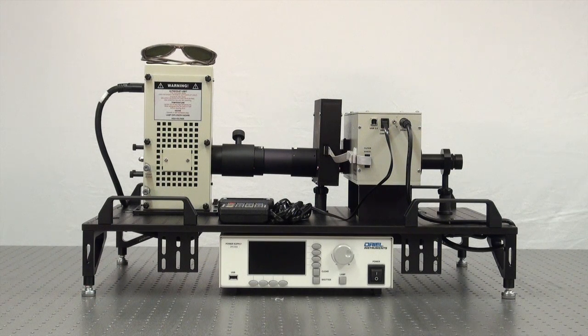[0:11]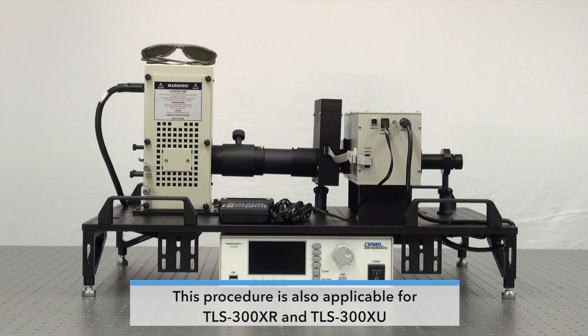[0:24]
Hi, I'm going to show you how to replace and align the lamp in your tunable light source system. So if you have our TLS-75X or TLS-300X models, you're going to want to follow this procedure because you have a xenon lamp inside your tunable light source.
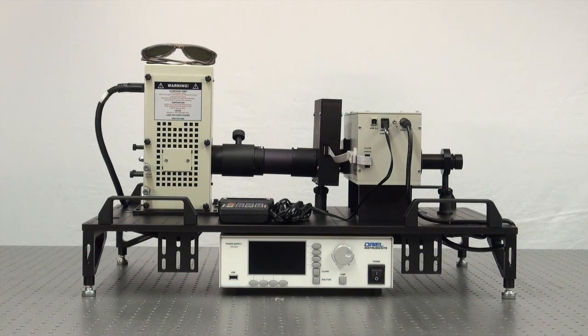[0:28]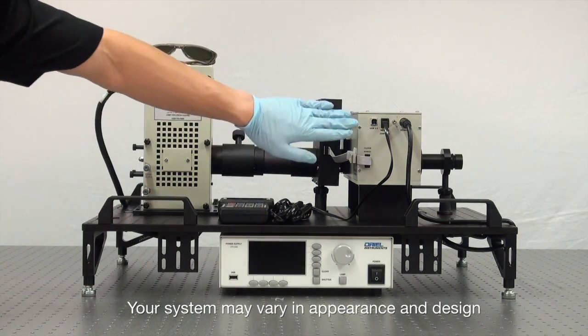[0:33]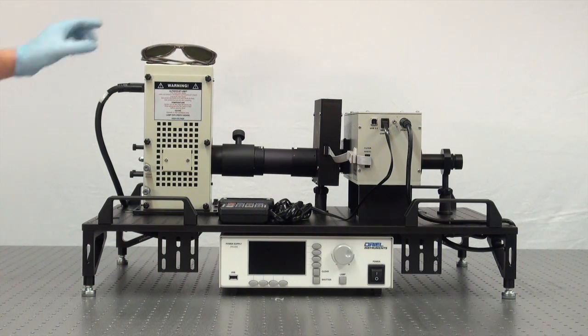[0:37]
So before beginning this procedure, it's important to follow the necessary safety precautions. We're going to make sure that both our power supply and our monochromator are not only powered off, but unplugged as well. It's also important to wear safety glasses because you're working with a high pressure xenon lamp. And it's also important to wear powder-free gloves as well, because you never want to touch the glass envelope of a lamp with your bare hands. So we're going to put on our safety glasses.
And there's 6 thumb screws that fix the side panel of the lamp housing. We're going to unscrew these to allow us to access the lamp. Once those 6 thumb screws are removed, we're going to gently remove the side panel to the lamp housing.
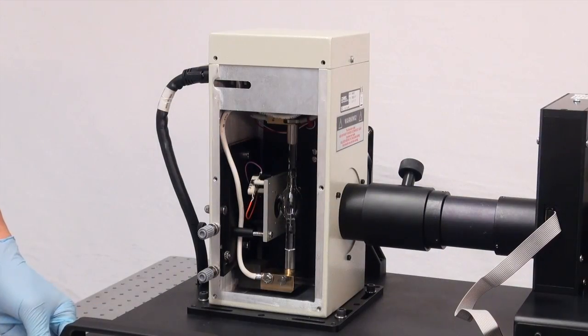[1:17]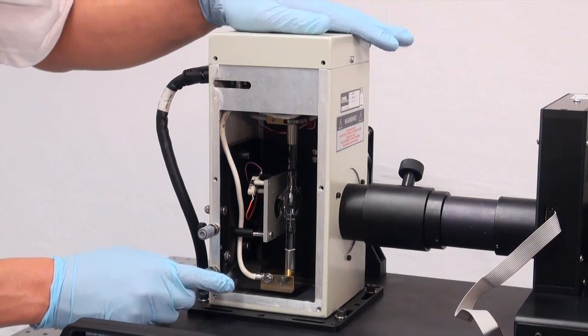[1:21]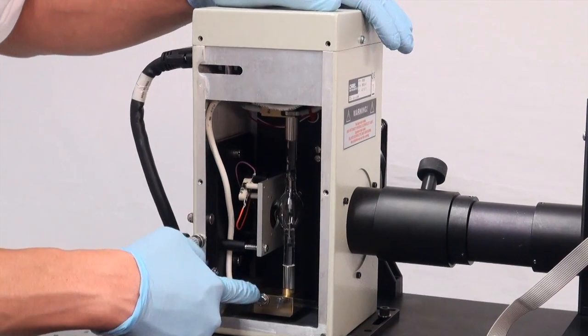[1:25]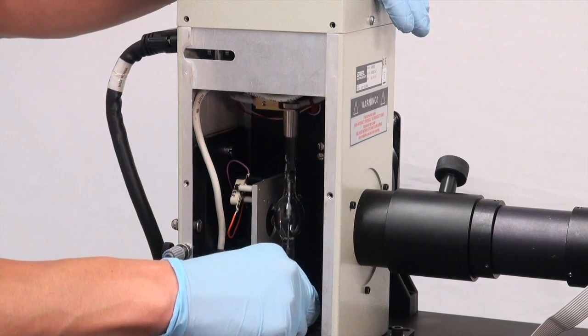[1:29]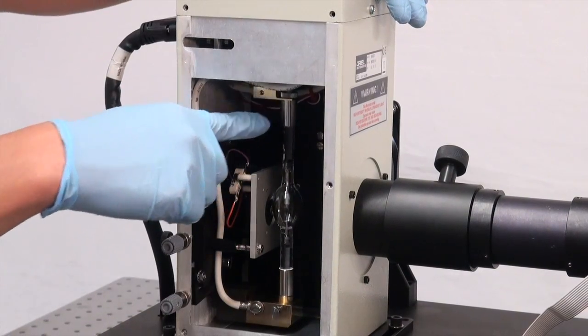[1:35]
So this is our xenon arc lamp. It's reached the end of its lifetime and we're going to replace it. So to start, first we're going to loosen this screw over here and loosen the bottom end of the lamp. And then there's also a screw at the top of the lamp attached to the sensor block holding the top end of the lamp in place. So we're going to loosen that too.
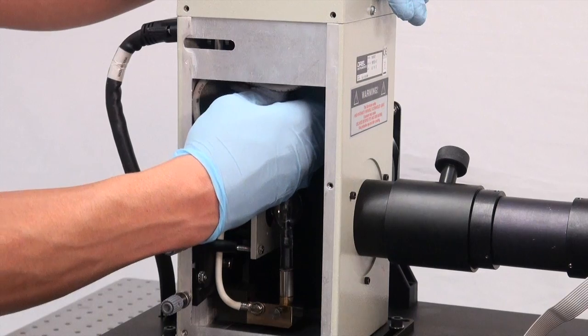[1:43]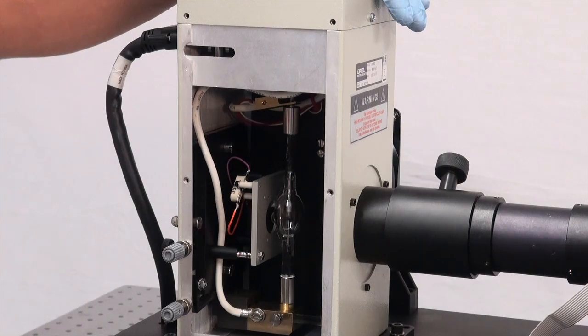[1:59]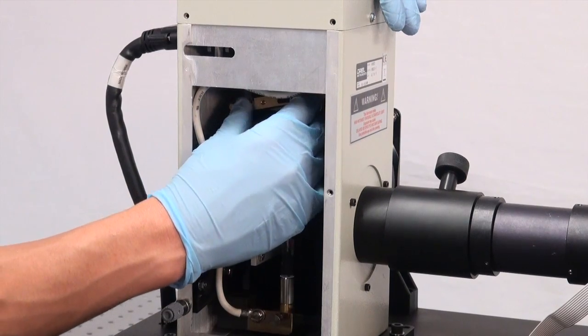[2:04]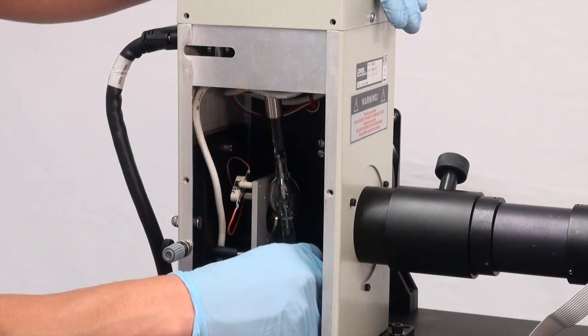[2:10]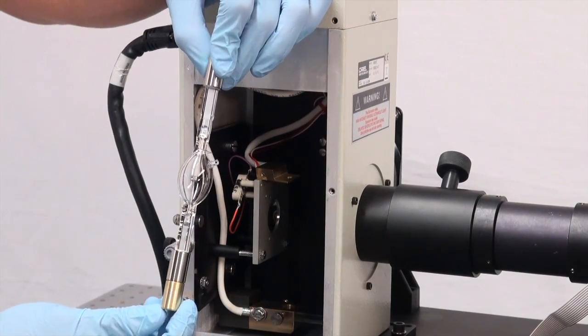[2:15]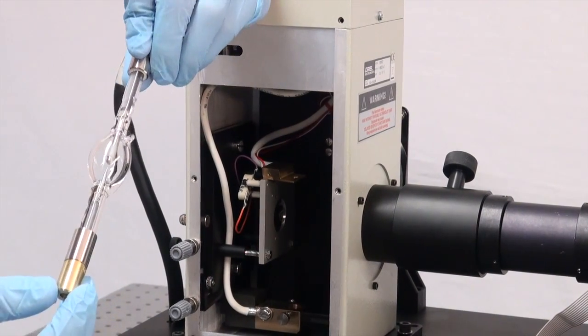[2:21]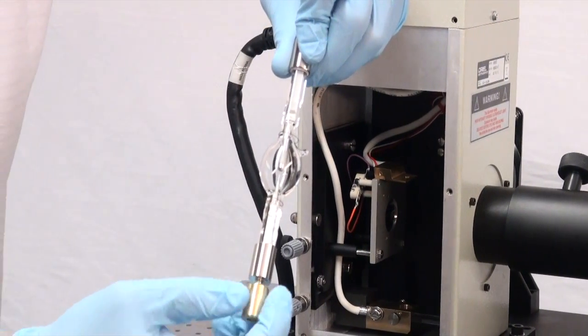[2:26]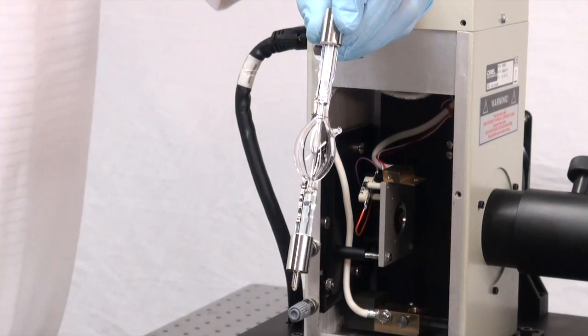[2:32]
We're actually going to completely remove this screw. And then we're going to remove the sensor block from the top portion of the lamp. And now we've just removed our xenon lamp and we're getting ready to replace it. This is the socket adapter. It's attached to the bottom end of the lamp and it should unscrew simply like this, very easily. And now you've just uninstalled your xenon lamp and you're ready to replace it with a new one.
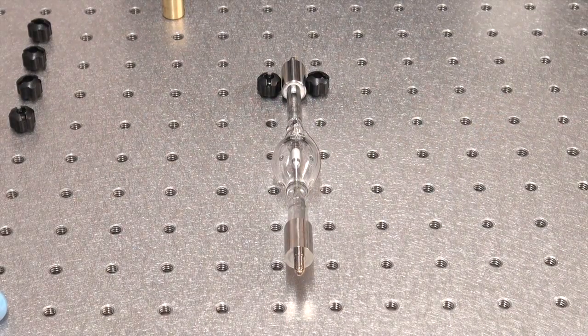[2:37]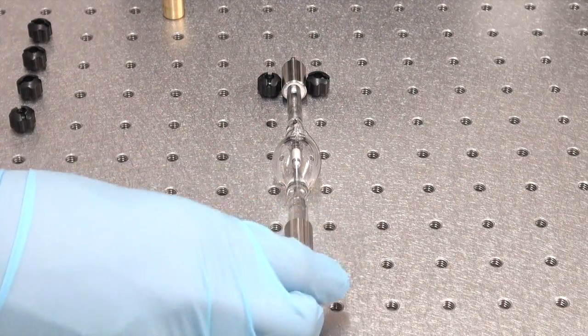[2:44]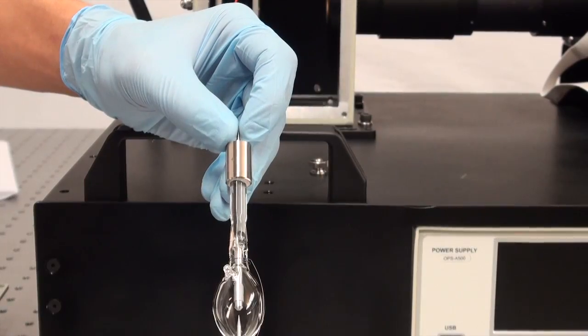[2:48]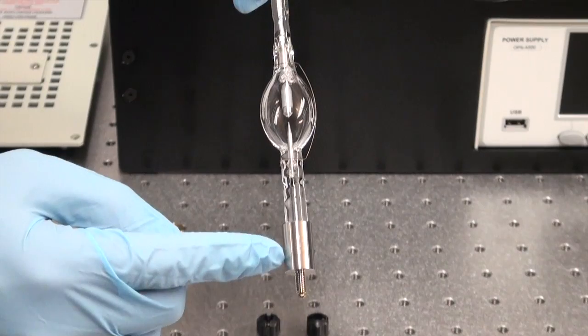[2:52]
So this is our new xenon arc lamp. We're getting ready to replace it into our tunable light source. So these next few steps are very important. When you install a new xenon arc lamp, you should notice that there's a positively marked end. This is the anode of the xenon arc lamp. And there's also the cathode, which is a negatively marked end.
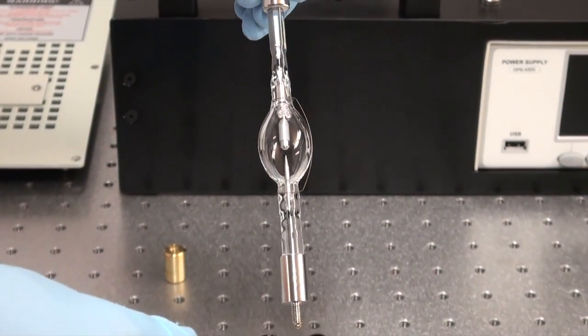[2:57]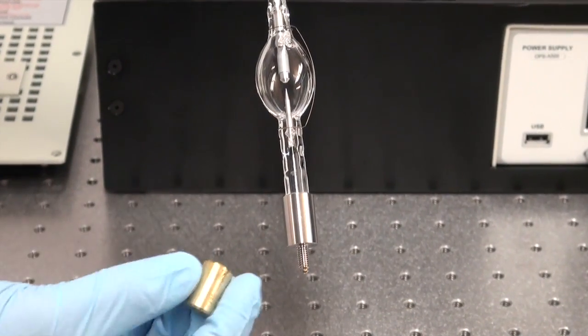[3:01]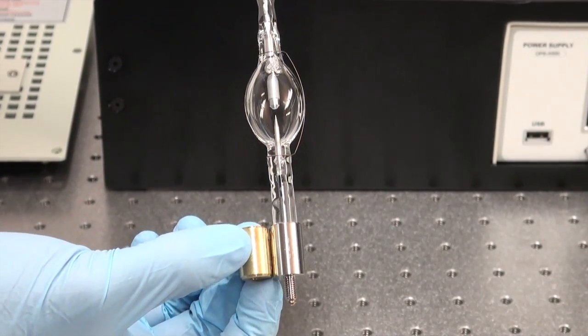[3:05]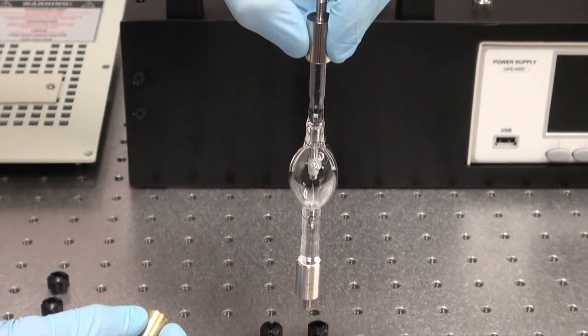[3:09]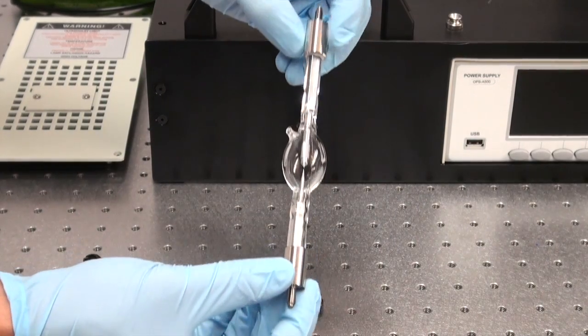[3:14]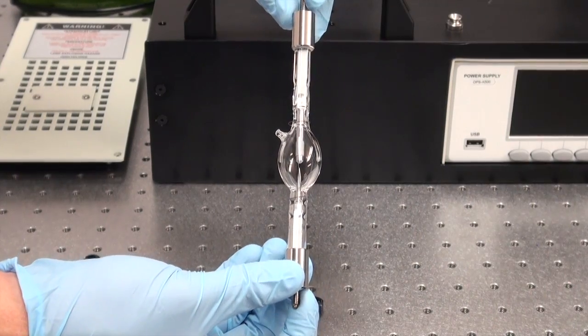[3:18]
When you install the xenon arc lamp into your system, it's very important that the socket adapter be installed to the cathode, or the negatively biased end. And it should also be installed with the negatively biased end, or the cathode, facing downward, like so. You'll also notice that there's this starter wire on the lamp. It's very important that you not remove this starter wire. It helps with ignition of the lamp.
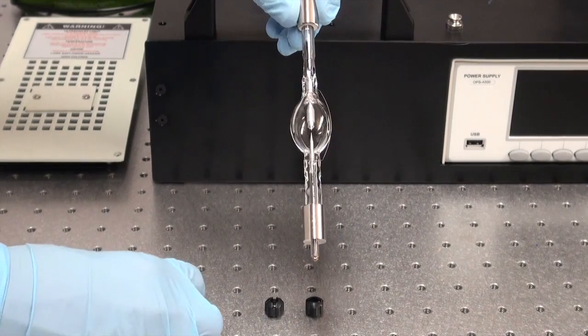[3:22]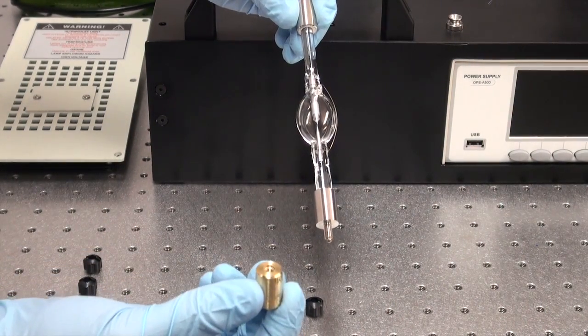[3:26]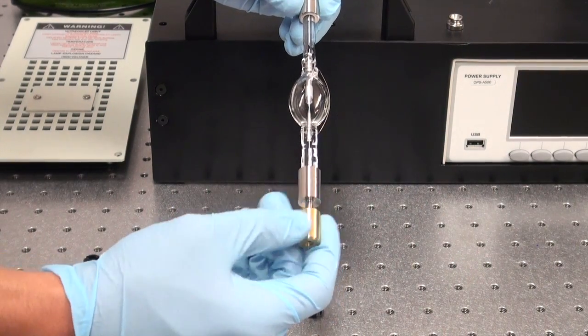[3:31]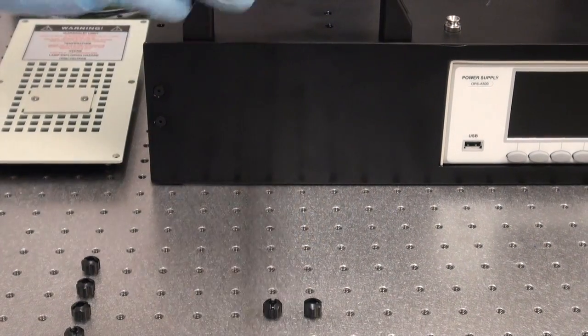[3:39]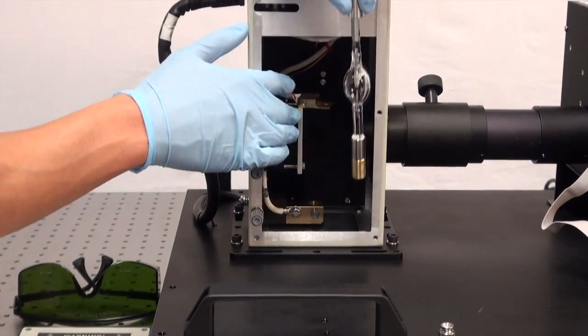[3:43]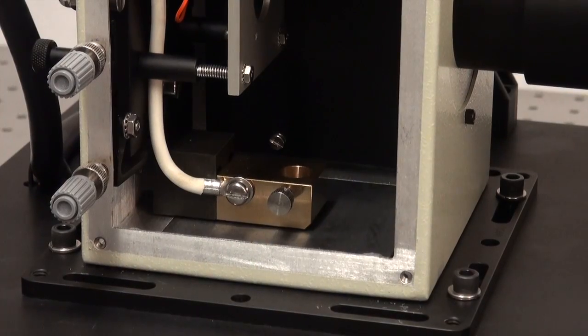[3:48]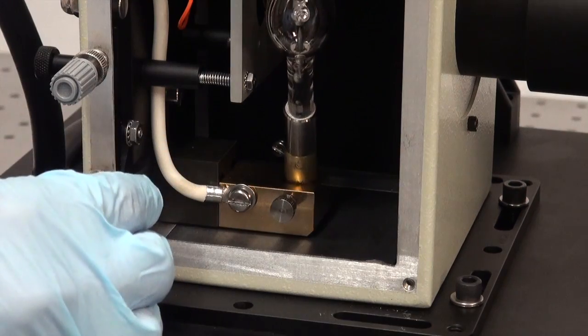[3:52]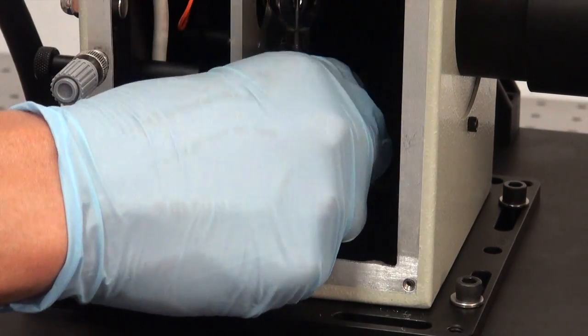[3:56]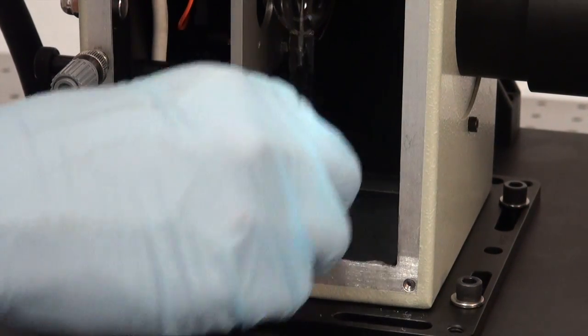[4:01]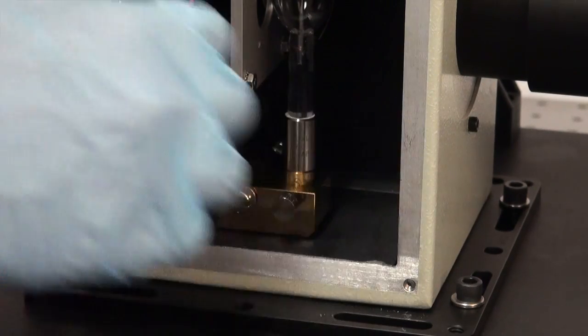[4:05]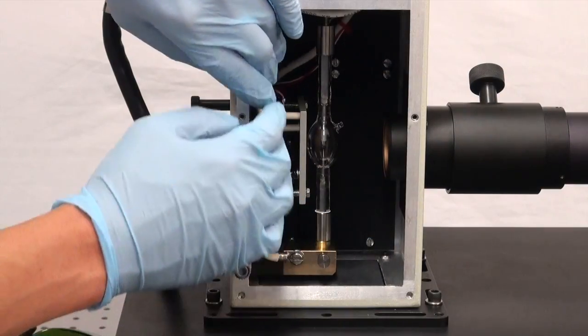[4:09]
So to begin to replace this lamp, we're going to place the socket adapter onto the cathode end of the lamp. And then we're going to reinsert the lamp into the lamp housing. So again, with the cathode, or the negatively biased end, it's going to go seated downward into the lamp housing. And that starter wire that I mentioned before, you don't want that starter wire to show up in the image of your lamp output. So we're going to move the starter wire so it's facing the side wall inside the lamp housing.
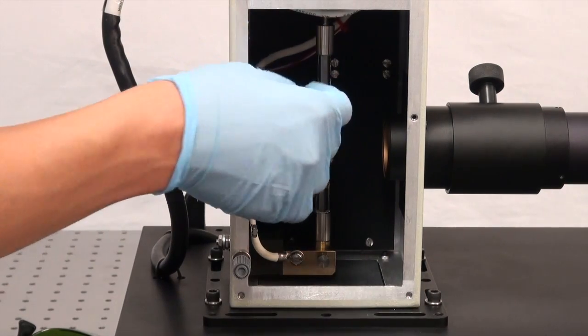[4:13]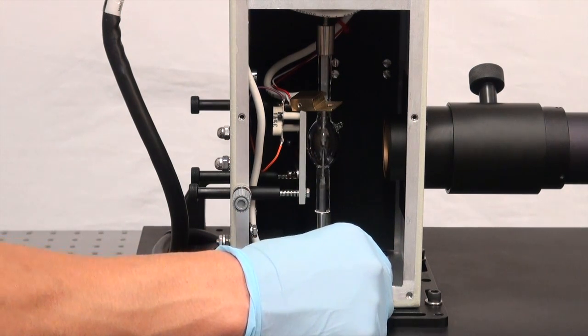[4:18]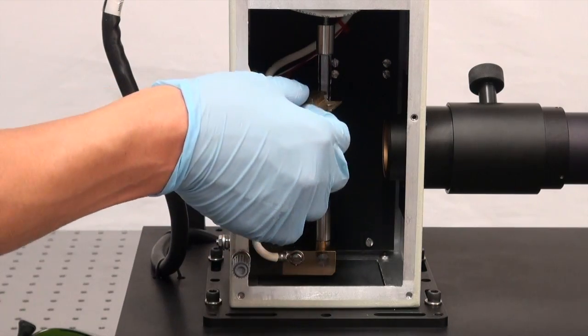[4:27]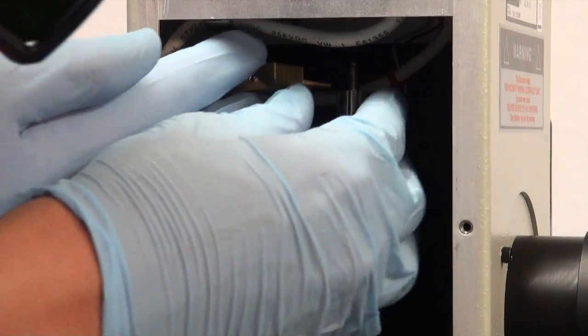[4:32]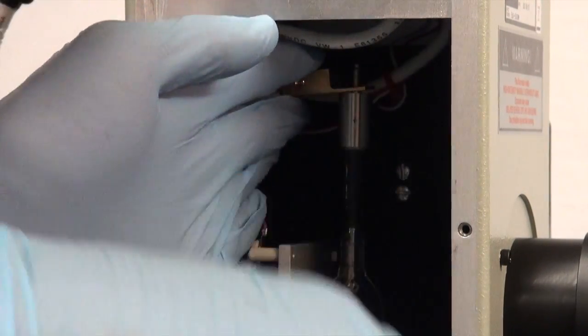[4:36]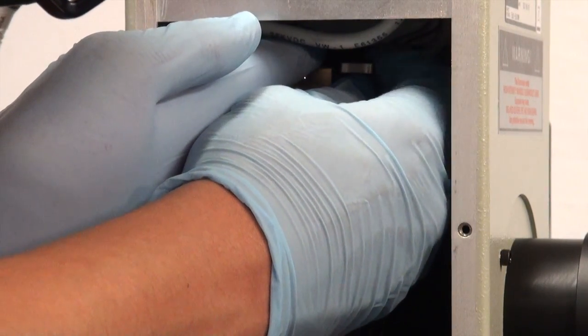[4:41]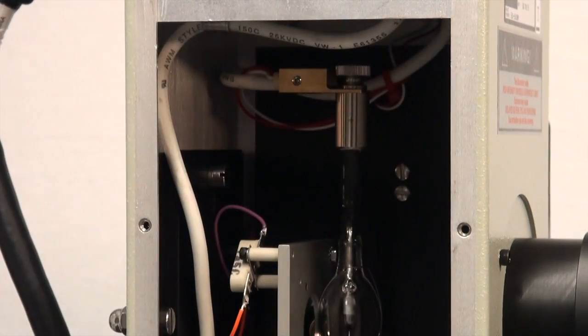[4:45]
And once we've inserted the xenon arc lamp, we're going to tighten it at the bottom by tightening this thumb screw again. And the sensor block, it's going to slide over the top of the xenon arc lamp like so. And this thumb screw that we removed before, once we have the sensor block at the top of the xenon arc lamp, we're going to reattach it and fix that sensor block to the top of the arc lamp.
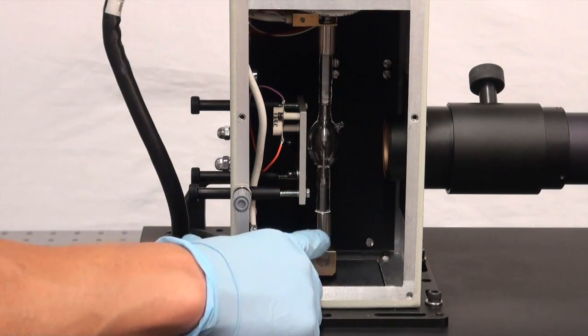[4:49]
So again, I stress that it's very important that the cathode be pointing downward when you install the xenon arc lamp into your system. Installing the xenon arc lamp upside down into your system could not only cause the lamp to burst, which is very dangerous, but it could also shorten the lifetime of the lamp as well.
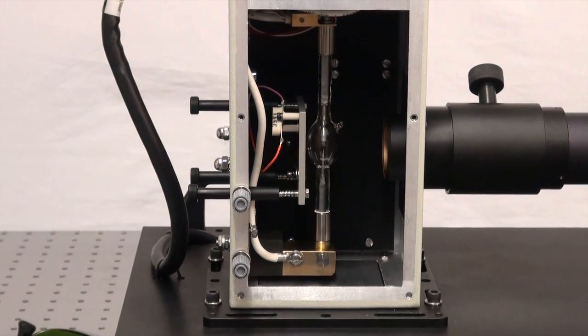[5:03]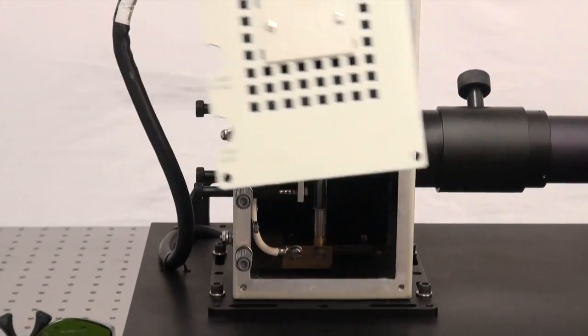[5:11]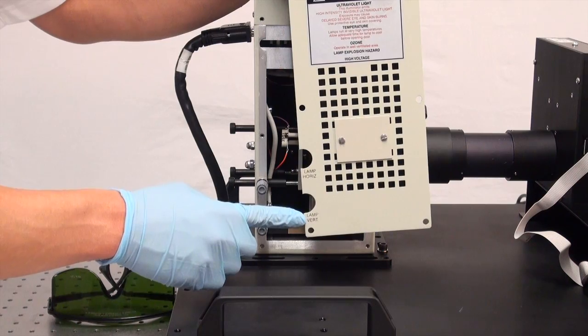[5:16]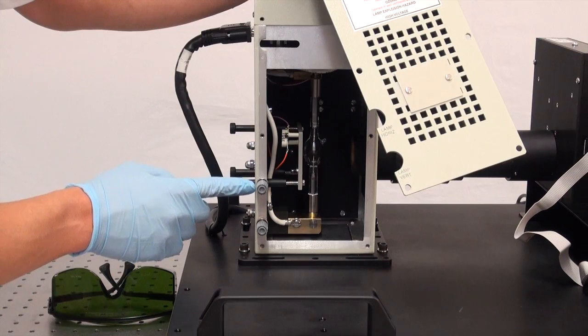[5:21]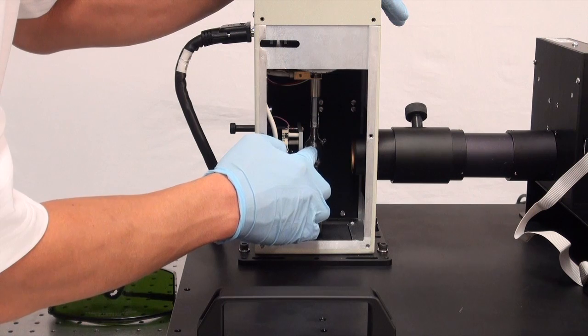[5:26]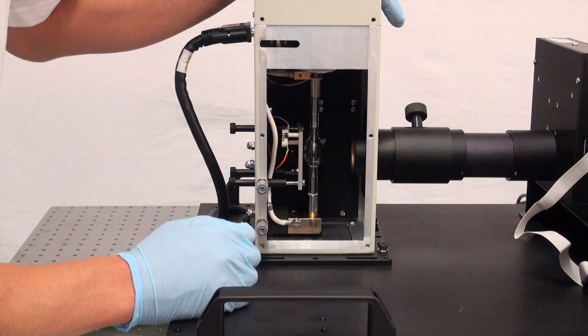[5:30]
And now that the lamp is installed, we're going to actually begin the alignment procedure here. So if you notice before when I removed the side panel of the lamp housing, there's lamp horizontal and lamp vertical. That refers to these side knobs and the direction that they move the lamp inside the housing. What you want is the arc lamp to be visually in the center of the focusing lens assembly of the lamp housing. And you're going to do this by eye the best you can before you reattach the side panel of the lamp housing.
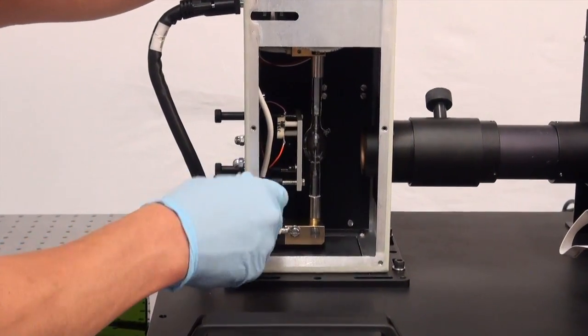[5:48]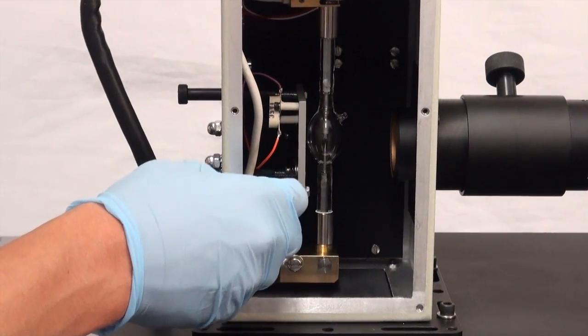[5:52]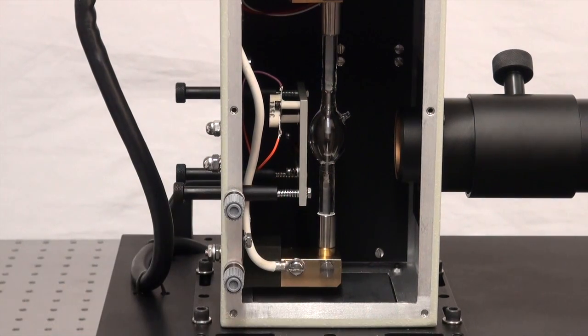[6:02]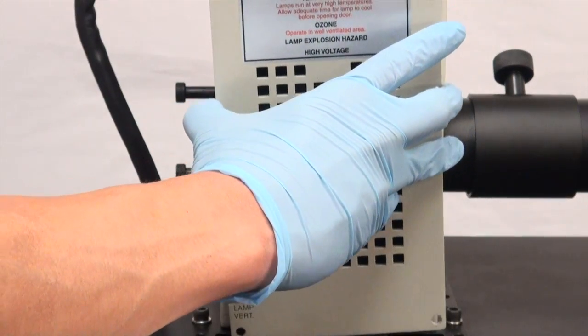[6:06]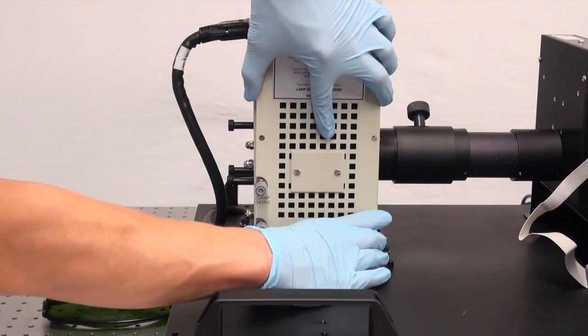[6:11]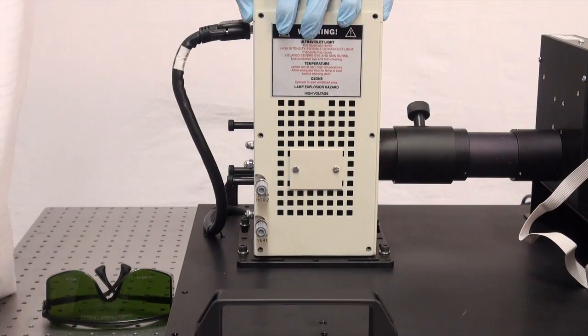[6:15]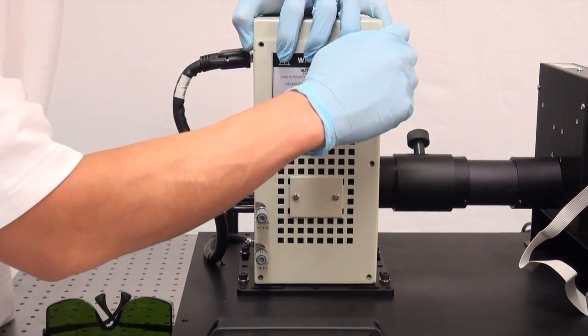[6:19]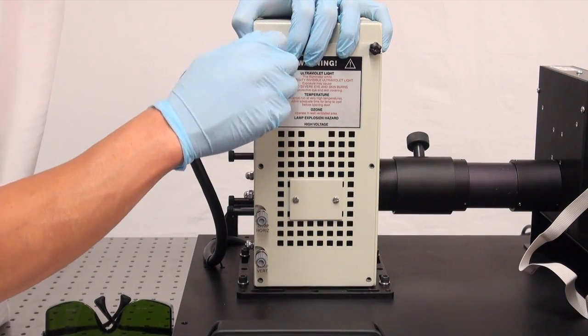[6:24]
I mean, visually, it's as best as you can get it. What you're going to do is replace the lamp housing door like this, and reinsert those 6 thumb screws we removed earlier to remove the side panel of the lamp housing. So now we're going to fix it back in place.
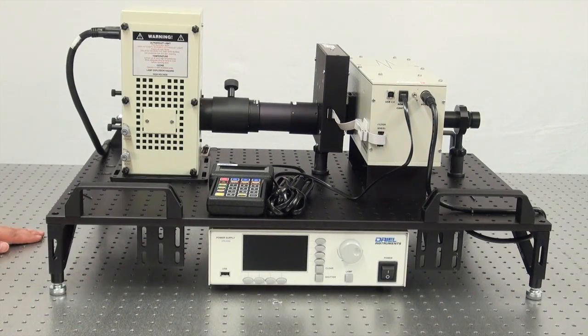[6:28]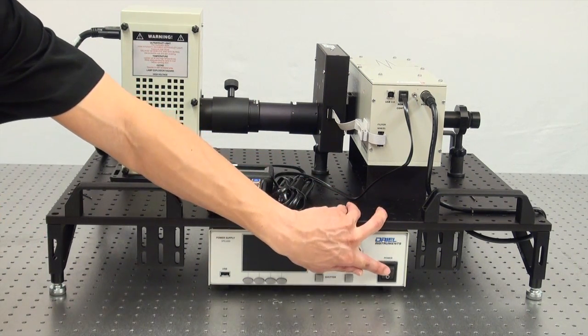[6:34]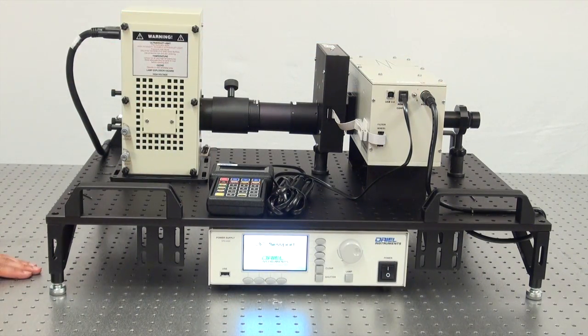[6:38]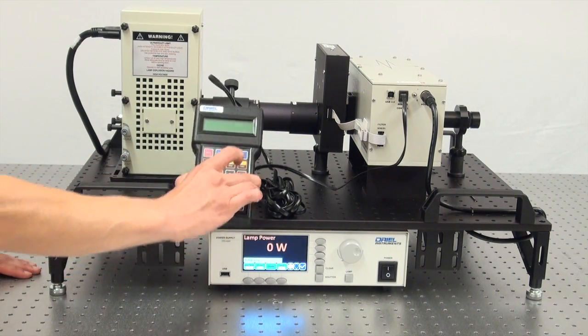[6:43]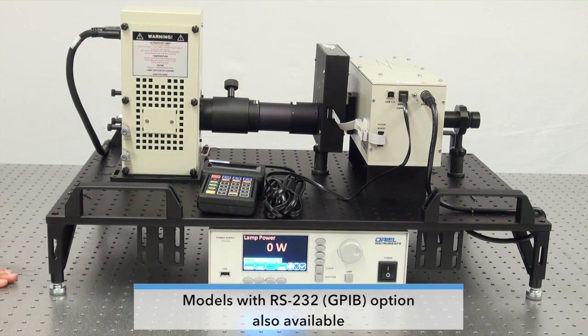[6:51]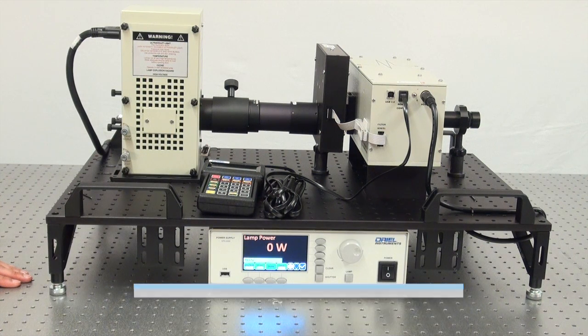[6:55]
So now that we've installed the lamp and replaced the side panel to the lamp housing, we're ready to ignite the lamp. So we're going to turn on our power supply and our monochromator. For this demonstration, I'll be using our handheld controller for the monochromator. For those of you that prefer to use your laptop for external control, there's also a USB 2.0 connector on the monochromator as well, and it can be controlled using our TracQ software designed for this system.
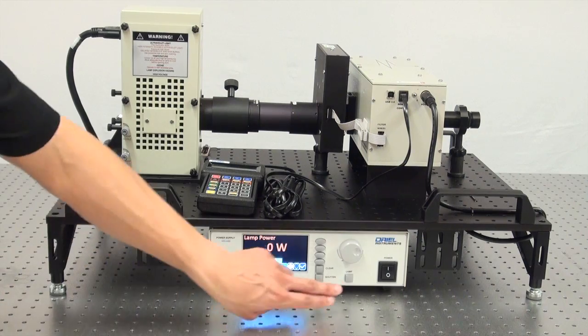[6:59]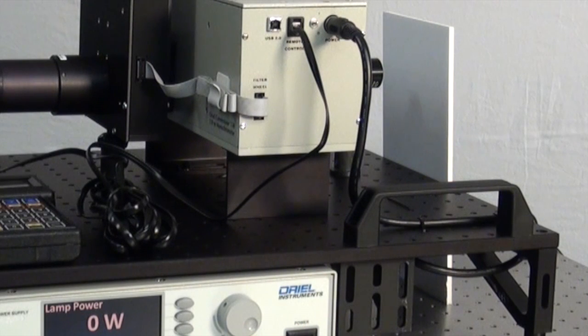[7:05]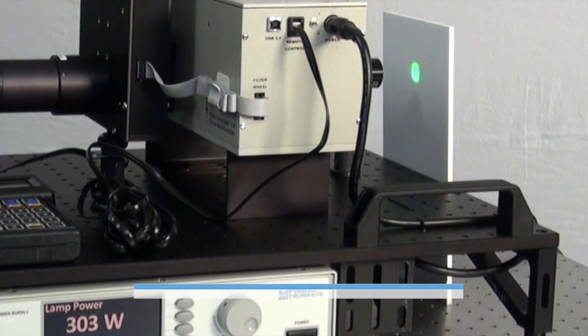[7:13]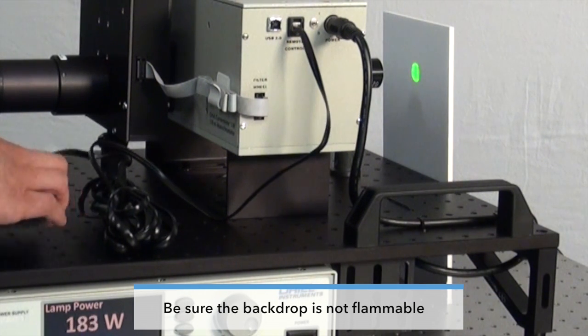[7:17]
And when you're ready, we're going to ignite the lamp so you can see the light output from the system. It also helps to have a white or black sheet of paper to serve as a backdrop a few inches away from the light source so you can see the output of the light source. And it also helps to set your monochromator to 0 to achieve a white light output.
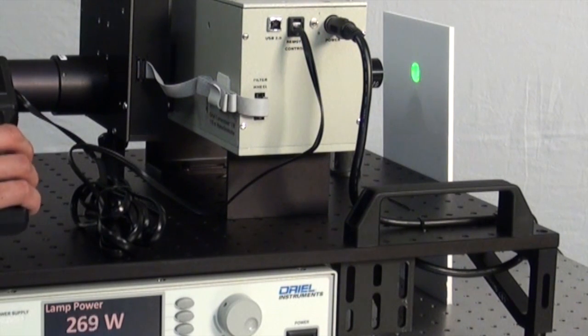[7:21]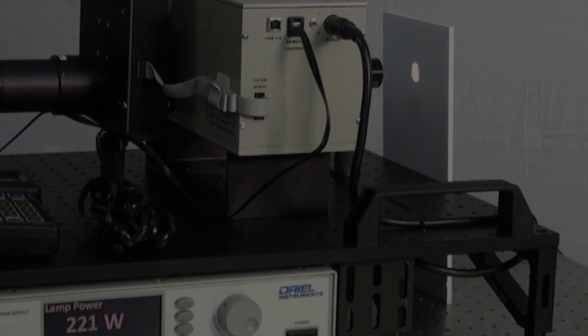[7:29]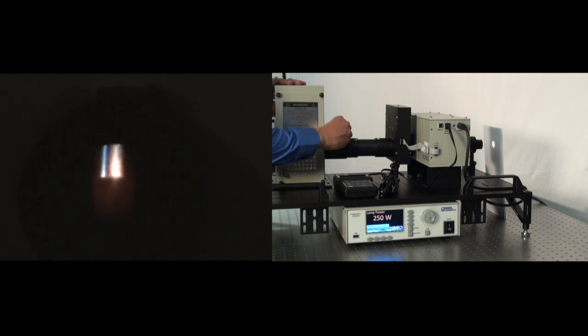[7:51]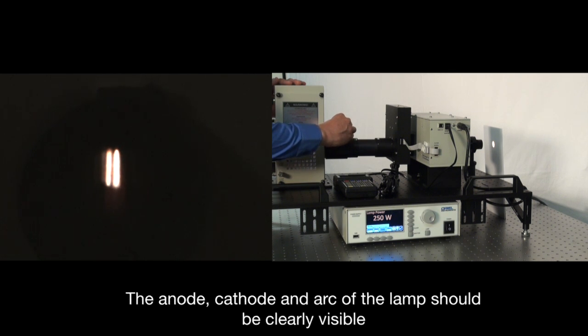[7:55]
So now that we've ignited our xenon arc lamp, we're going to focus the image of the arc between the anode and the cathode. This is done by unscrewing the focusing knob on the focusing lever between the research lamp housing and the filter wheel. We're going to move this knob all the way to the front of the system, so it's as far away from the lamp housing as you can get, and then once it's in that position, we're going to tighten the knob at the top of the focusing lever to lock it in place.
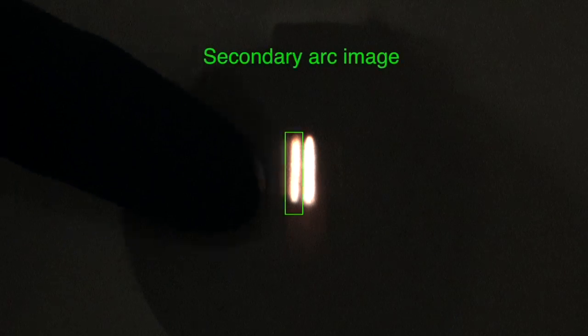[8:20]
What you'll notice there is that there are 2 images. You have a primary image. This is the primary image of the arc between the anode and the cathode, and there's also a smaller and fainter image of the arc. This is from the rear reflector inside the lamp housing. So for this portion of the alignment, we're going to focus on the primary arc.
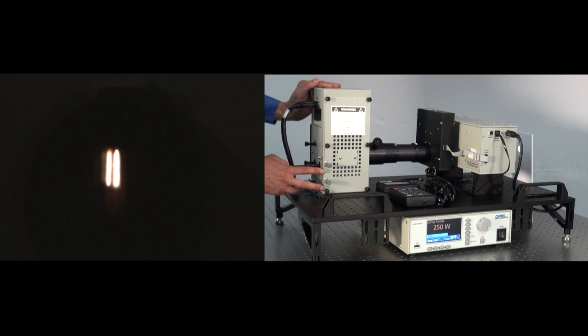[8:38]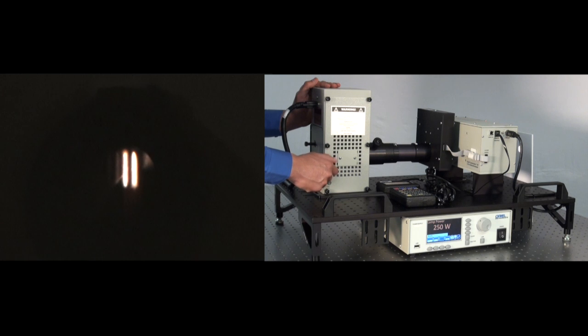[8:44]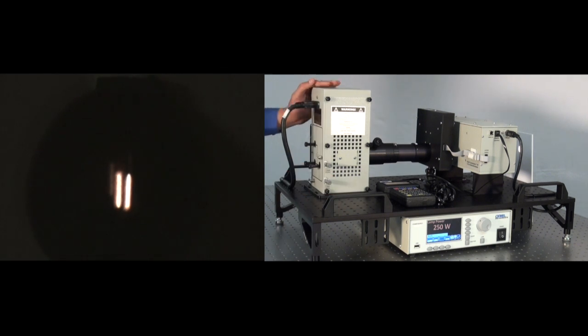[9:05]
And you can see we have a circular output of the lamp, but the arc isn't centered within that circular output. So we're going to use those horizontal and vertical adjustment knobs that we used earlier to both vertically and horizontally center the arc of the lamp into that circular spot size as best we can. And once it's centered, now we're going to focus on the secondary image of the arc.
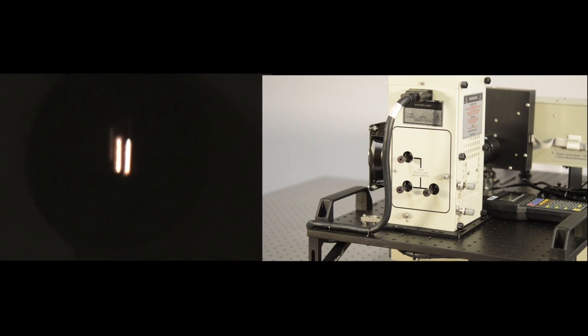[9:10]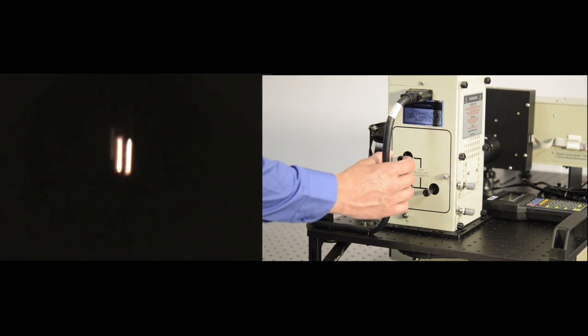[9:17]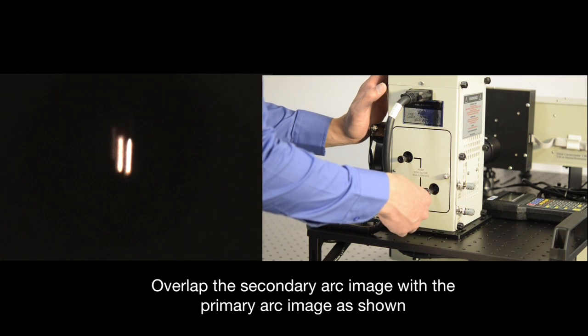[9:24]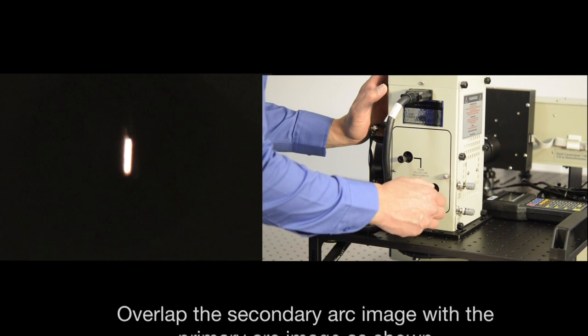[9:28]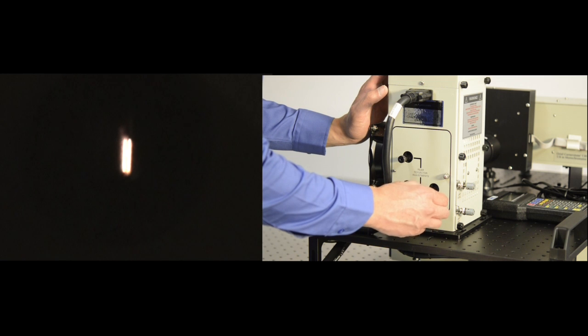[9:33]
We're going to use those rear reflector adjustment knobs at the rear of the housing that we used earlier. And what you want is the secondary image of the arc to be completely superimposed with the primary image, like so. So again, this was the secondary image, and you'll notice that as you rotate those rear reflector adjustment knobs, the secondary image of the arc will move in a particular direction.
But what you want is to superimpose and almost completely hide the secondary image of the arc lamp behind that of the primary image. And what this is actually going to do is increase your brightness, because now the secondary image from the arc lamp is being completely reflected onto the primary. So this is increasing the output power of the lamp and saving you backscatter that you would have lost otherwise.
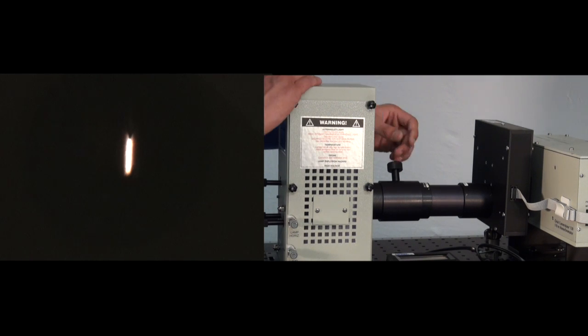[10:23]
And once they are completely superimposed, and you only see one image of the arc, we're going to loosen that focusing knob at the top of the focusing lever of the lamp that we used before. And we're going to move it closer to the lamp housing until you see a uniform white light output from the lamp.